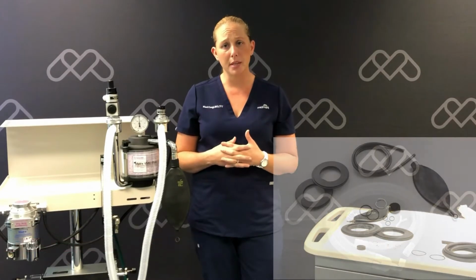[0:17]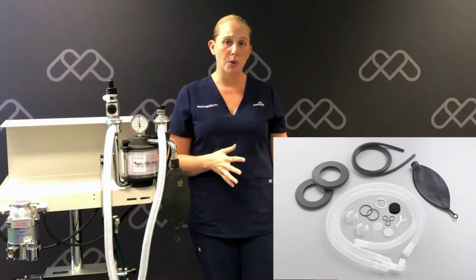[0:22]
As part of your anesthesia machine's maintenance, it is recommended that you use a maintenance kit and replace those components in that kit every 2 years. I'm going to walk you through step by step on how to replace those components.
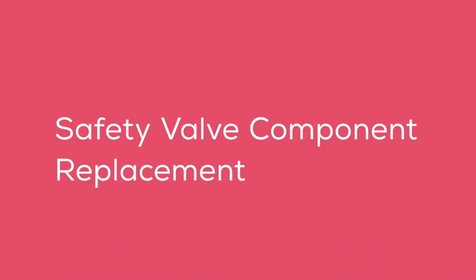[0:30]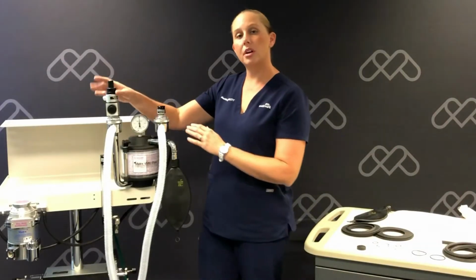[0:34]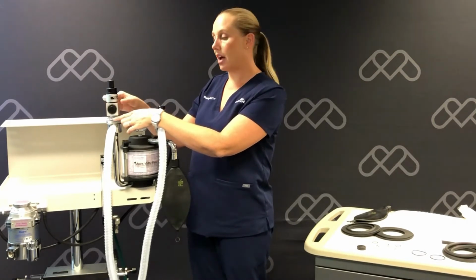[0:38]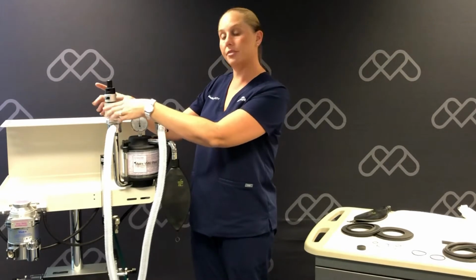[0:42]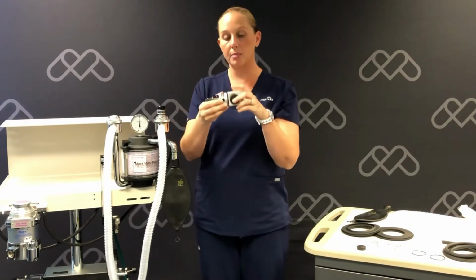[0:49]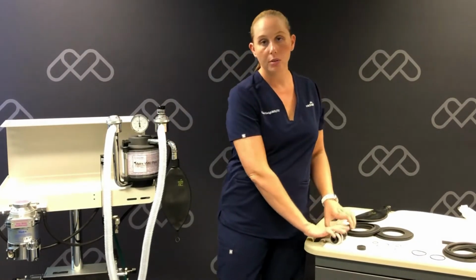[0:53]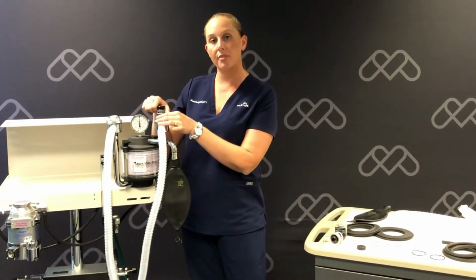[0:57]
We're going to start with unscrewing the APL valve and our safety occlusion valve from the plastic dome found on top of your exhalation valve. Once off, we're going to separate them from each other. We're also going to remove our negative pressure relief valve from the plastic dome found on the inhalation valve.
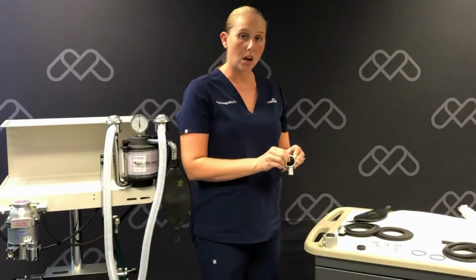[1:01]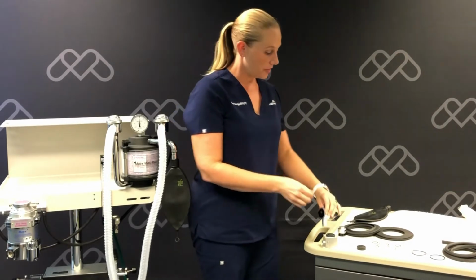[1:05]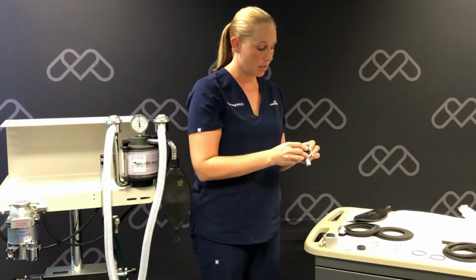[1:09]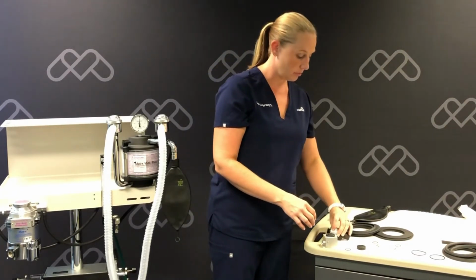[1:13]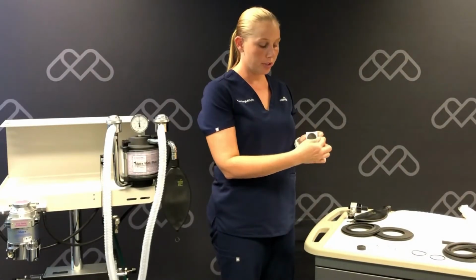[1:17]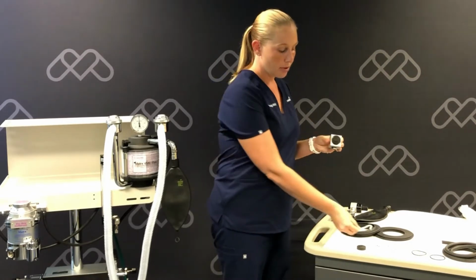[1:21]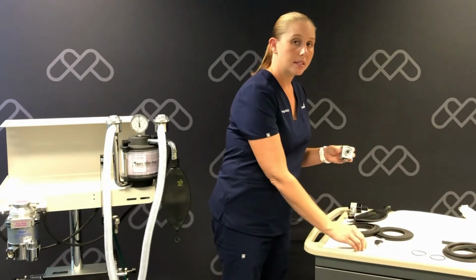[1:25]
Once these valves are off, we're going to remove the small O-rings off the threads and replace those with the new small O-rings. You will do this on all 3 of the safety valves. On the safety occlusion valve, we're going to remove the white backup ring and rubber diaphragm and then replace them with your new.
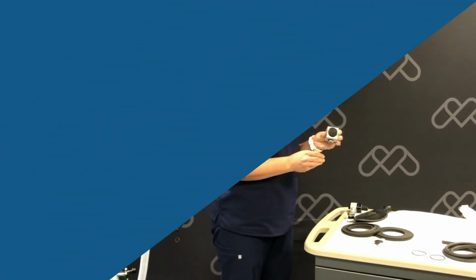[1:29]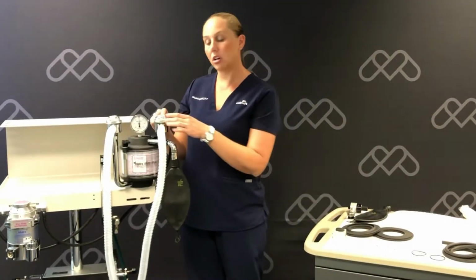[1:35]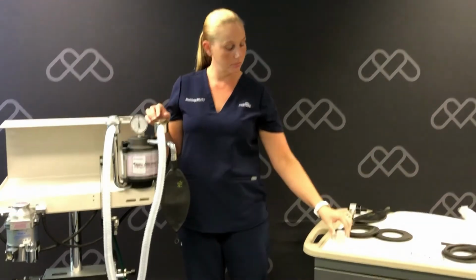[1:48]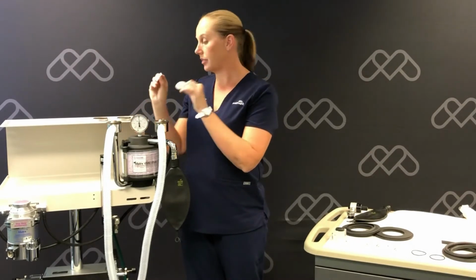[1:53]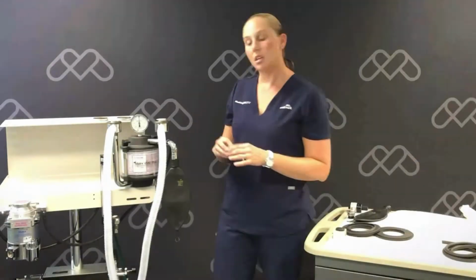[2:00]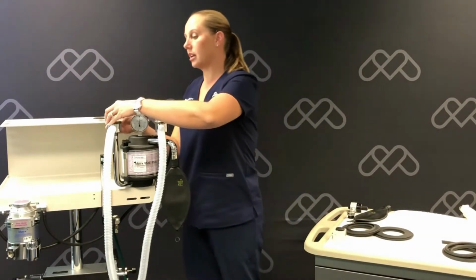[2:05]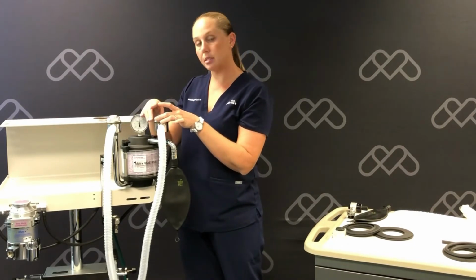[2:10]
We'll now remove our clear plastic domes from our inhalation and exhalation valves. You're going to loosen the silver retaining ring to get to them. We're also going to remove our white flutter disc off each valve and the large O-ring and replace those with the new. We'll place our new clear domes on the inhalation and exhalation valve and tighten them back down with the silver retaining rings.
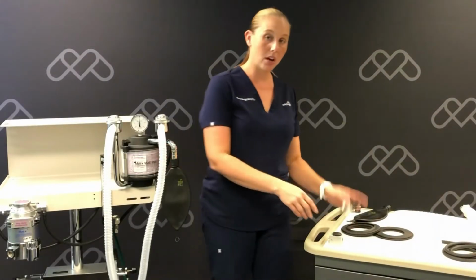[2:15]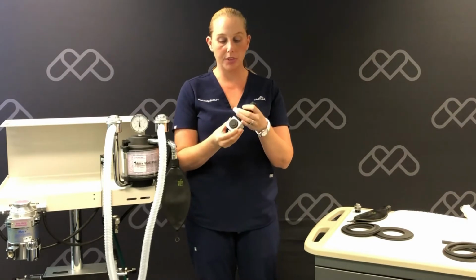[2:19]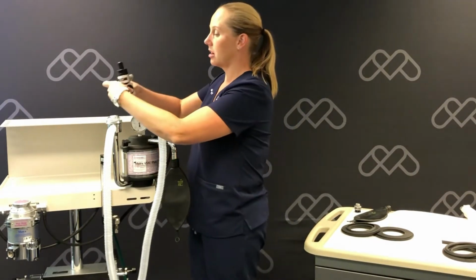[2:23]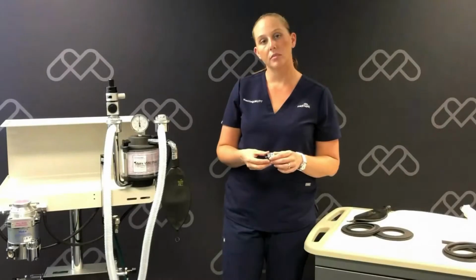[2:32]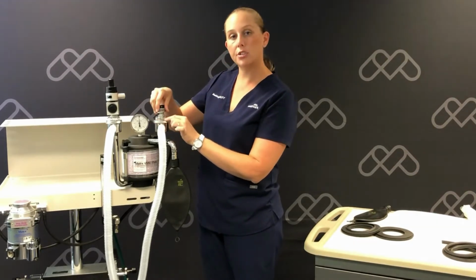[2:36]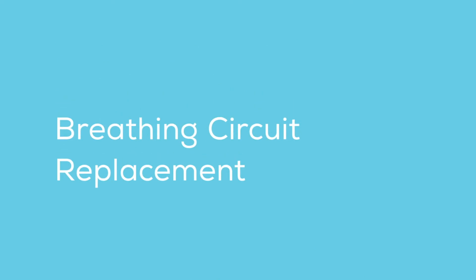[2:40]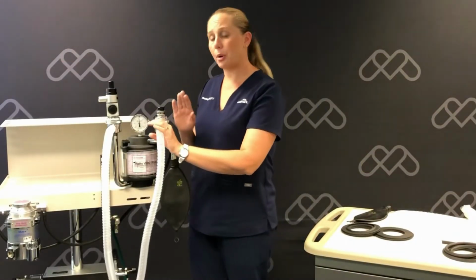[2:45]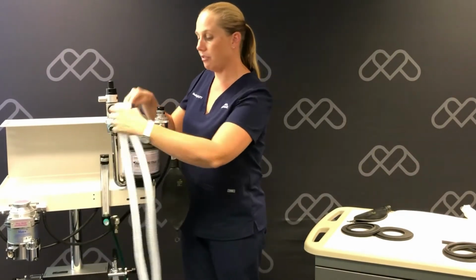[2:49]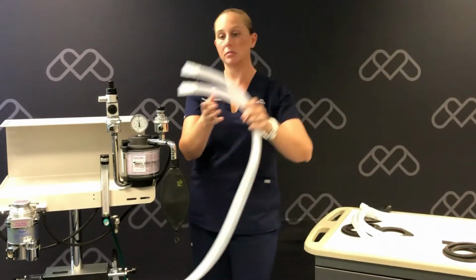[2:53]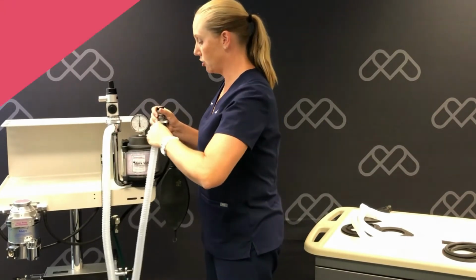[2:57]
Now we'll take our APL valve and our safety occlusion valve, put them back together with the threaded end, and we're going to reattach that onto our exhalation valve clear dome. Our negative pressure relief valve will now thread into the clear dome of our inhalation valve. Now we're going to remove our patient breathing circuit from the inhalation and exhalation valve, and we're going to replace it with our new. We're just going to push that onto the exhalation and inhalation valve.
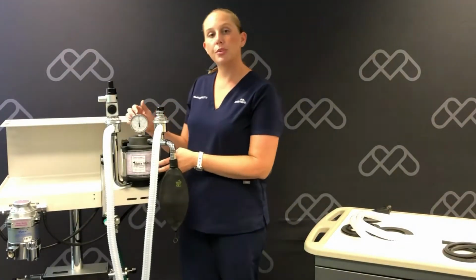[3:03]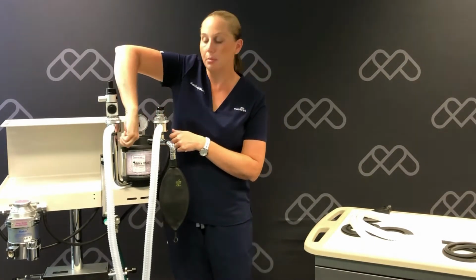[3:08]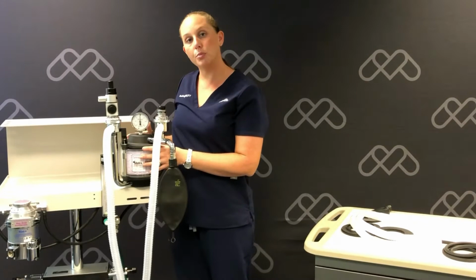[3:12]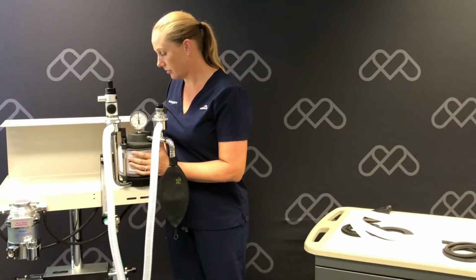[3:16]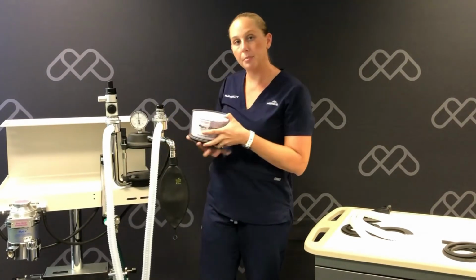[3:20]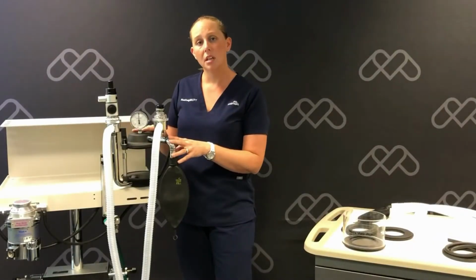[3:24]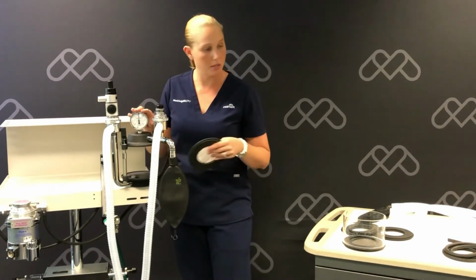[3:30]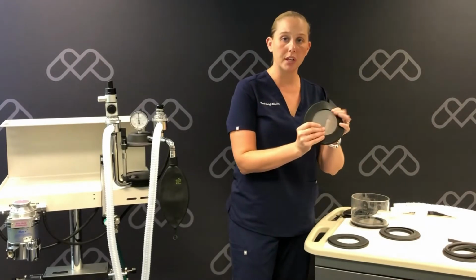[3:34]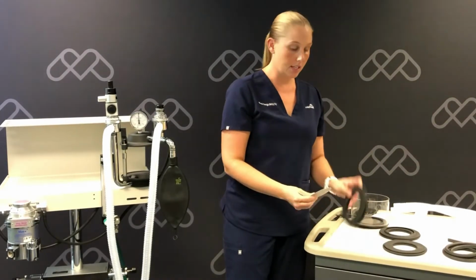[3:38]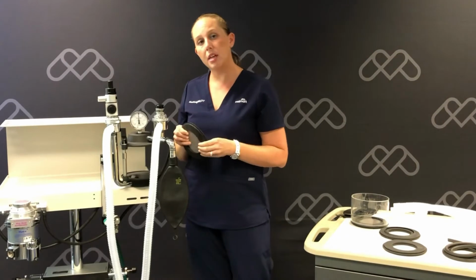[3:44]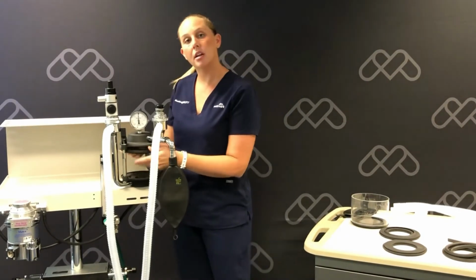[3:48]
Now we're going to remove our CO2 absorbent canister. We'll need to flip up the black flip levers of our CO2 absorbent housing. We'll discard this old soda lime that's in our canister. We're going to remove the upper rubber gasket from the upper portion of our absorber housing. We're going to remove the screen out of our upper gasket and place it inside the new. We're going to then put the upper gasket into the absorber housing with the lip facing up.
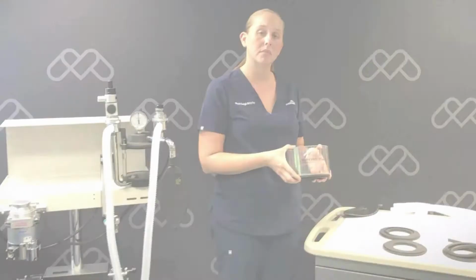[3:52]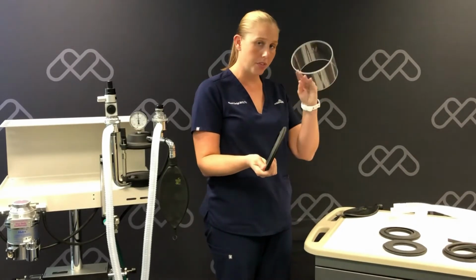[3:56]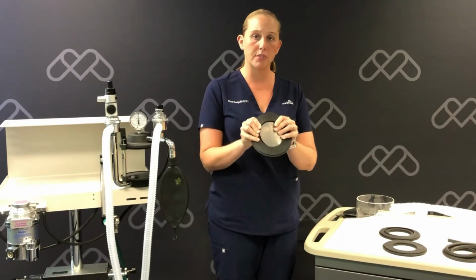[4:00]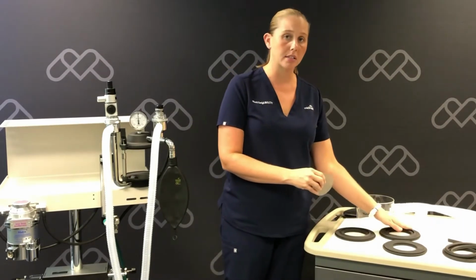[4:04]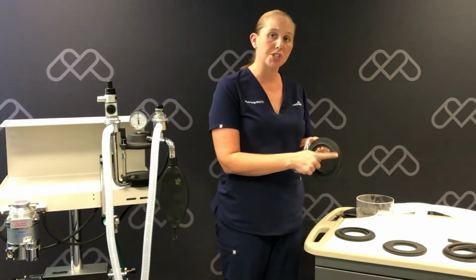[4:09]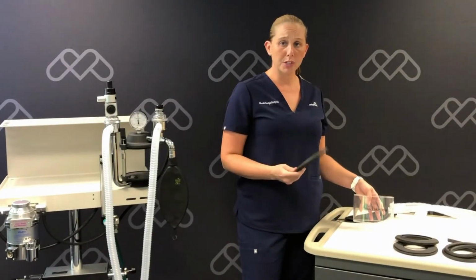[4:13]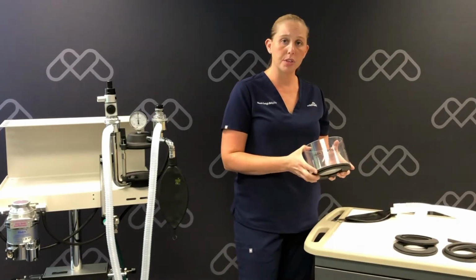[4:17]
Now we're going to pull or push the lower gasket off of the CO2 absorbent canister. We're going to remove the screen from the gasket and place that into the new lower gasket. The lower gasket will have an inner ridge which differentiates it from the upper gasket. Now we're going to replace the new lower gasket onto the absorbent canister with the ridge facing upwards.
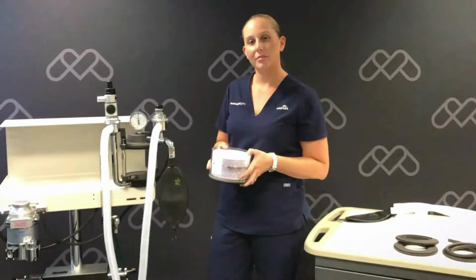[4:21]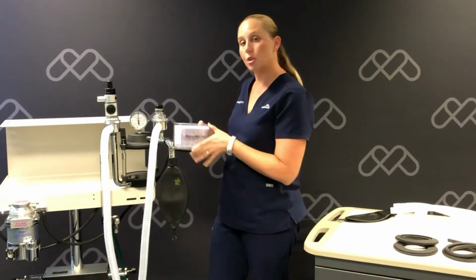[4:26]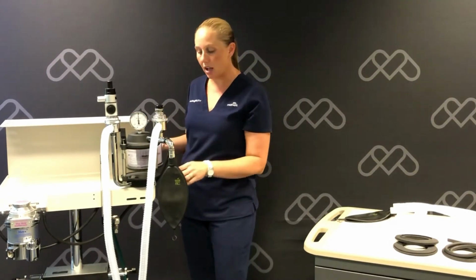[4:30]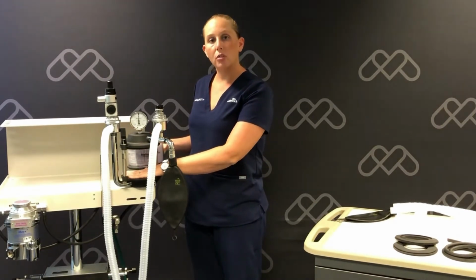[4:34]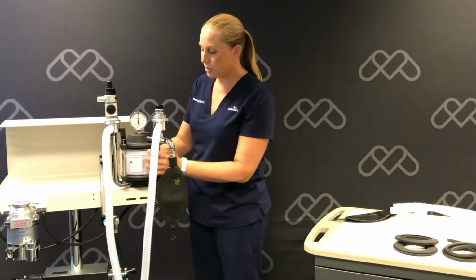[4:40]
Now we're going to replace our CO2 absorbent canister back into the absorber housing. We want to make sure that it's seated well. We also want to check for any debris that may be on the lower housing from the absorbent material. It's a good idea to clean that well if needed. We'll secure this back into place by using the black flip levers.
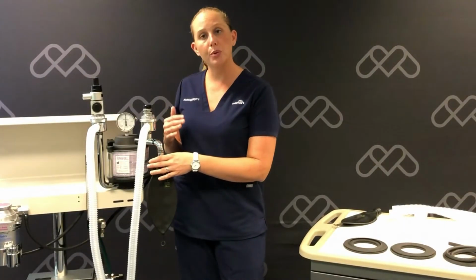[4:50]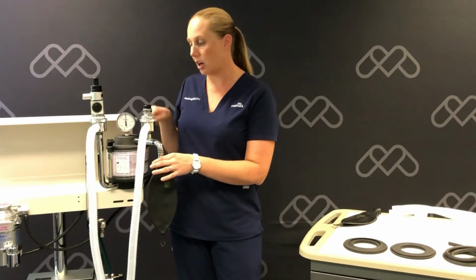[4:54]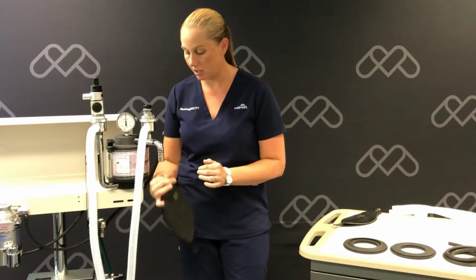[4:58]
Now we're going to remove and replace our reservoir bag off of the bag arm of our absorber. So I'm going to pull it by the neck and replace it.
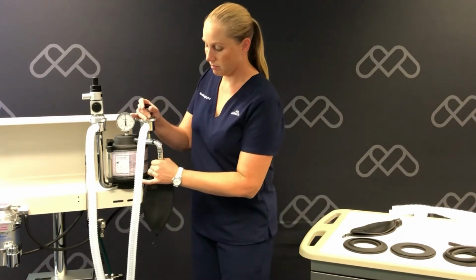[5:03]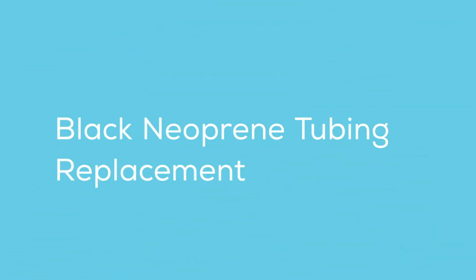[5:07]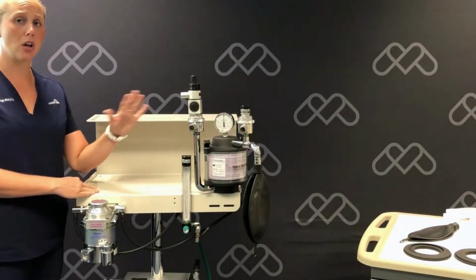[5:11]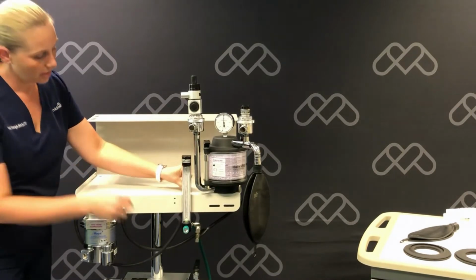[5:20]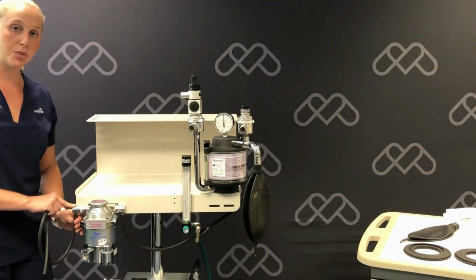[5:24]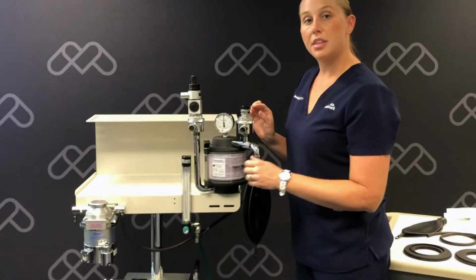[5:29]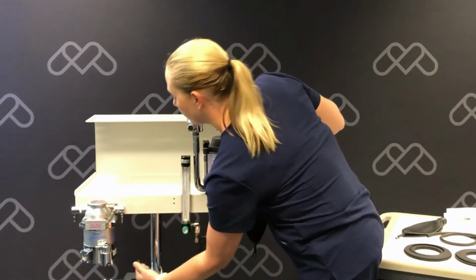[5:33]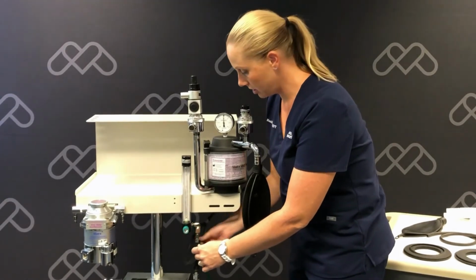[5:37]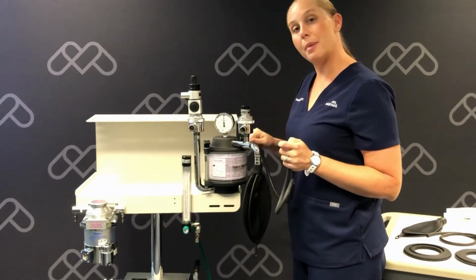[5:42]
Now we're going to remove all our black neoprene tubing and the plastic Y connector. I'm going to start by removing the tubing off the back of the flow meter, and then continue removing this piece from my vaporizer's inlet adapter. The next piece I'm going to remove is off of the vaporizer's outlet adapter. It then removes from the back of our flush valve and up here on our absorber housing on the bag arm.
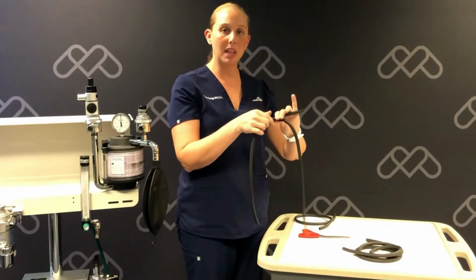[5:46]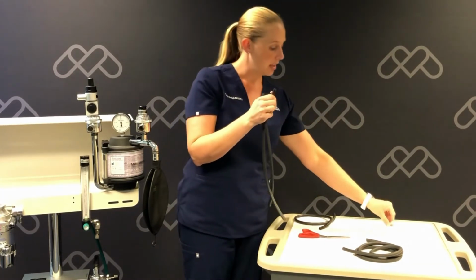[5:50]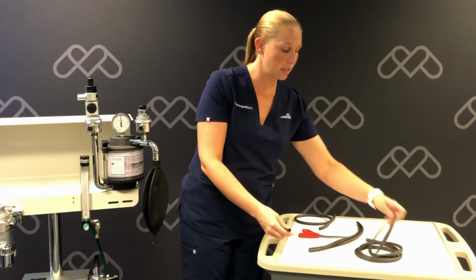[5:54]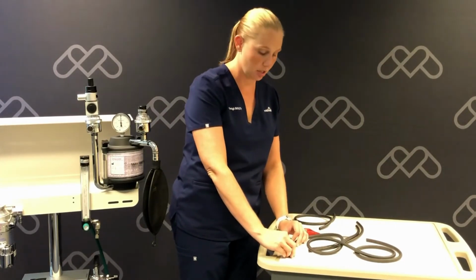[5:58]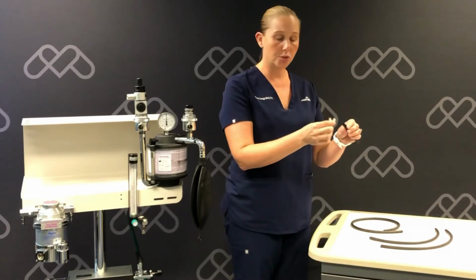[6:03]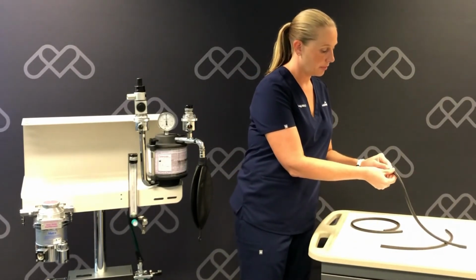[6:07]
Now we'll remove the black neoprene tubing off of the plastic Y connector. I will now use my new tubing and I'm going to cut to size for each piece that I just removed off the machine. Now we're going to put our new Y connector onto our new tubing. And we're going to put it back on our machine.
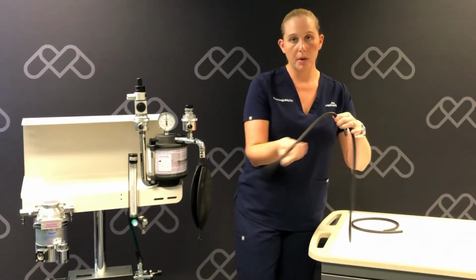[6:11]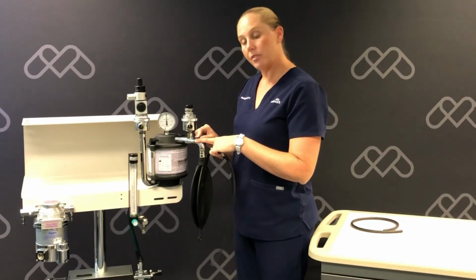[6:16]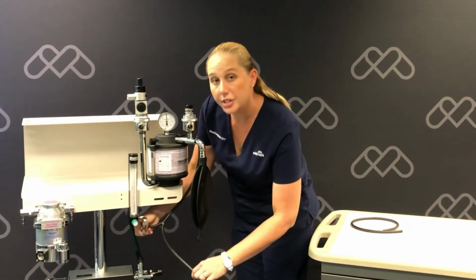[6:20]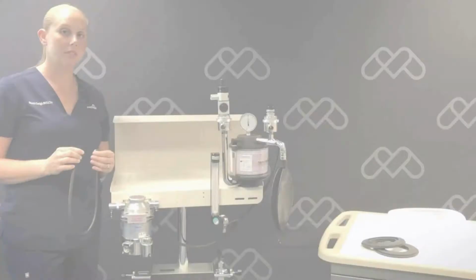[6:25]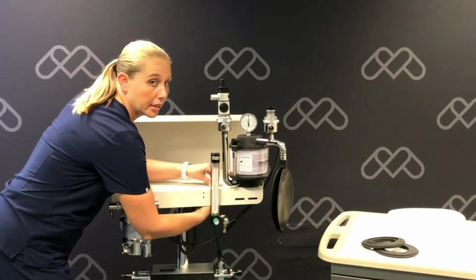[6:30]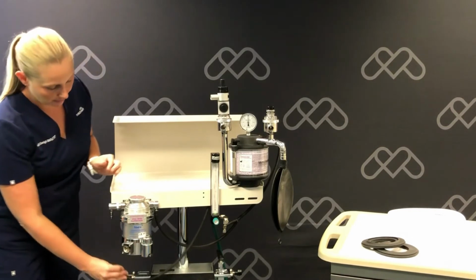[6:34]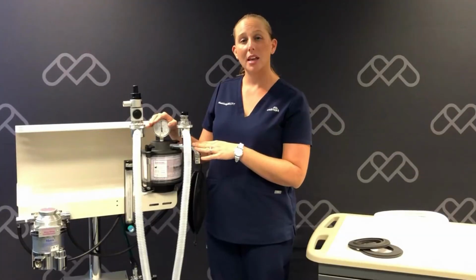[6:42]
So we're going to start by putting one piece on the bag arm of our absorber, then on the back of our flush, and back onto the vaporizer's outlet adapter. Our final piece of tubing we're going to put at the back of our flow meter, and the other end will go to our vaporizer inlet adapter. Now we've completed installing our maintenance kit.
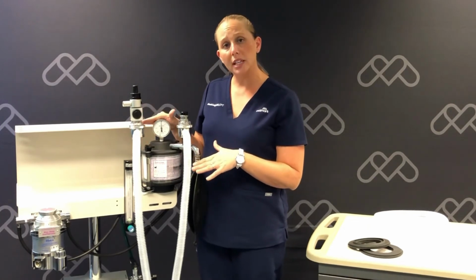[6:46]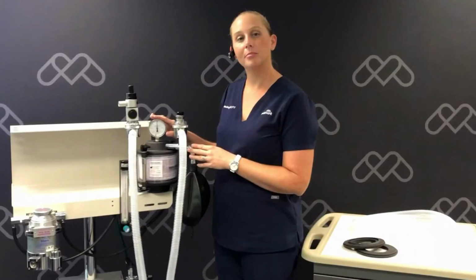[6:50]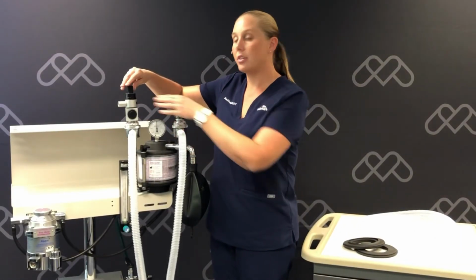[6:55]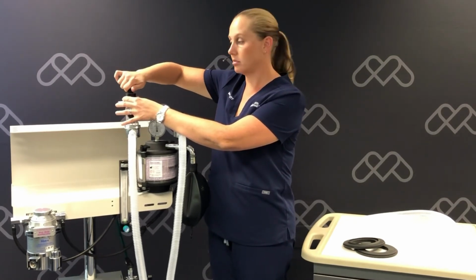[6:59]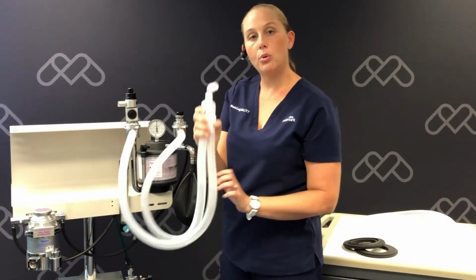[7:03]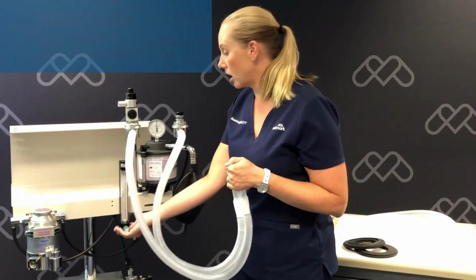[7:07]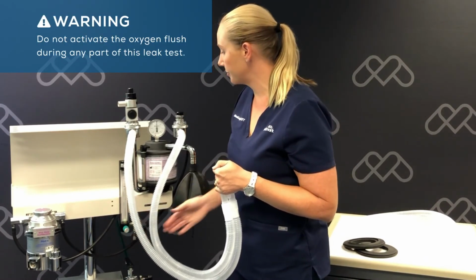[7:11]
Now we're going to want to do a leak test to make sure there's no leaks in the anesthetic machine. To begin our leak test, we're going to start with closing our APL valve. We're going to turn it clockwise in the direction of the pressure arrow. We're going to then cover the Y portion of our patient's breathing circuit with our thumb and turn on our oxygen flow meter. This will begin pressurizing the system.
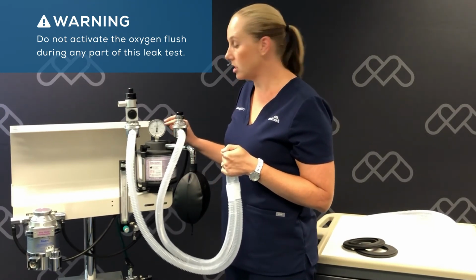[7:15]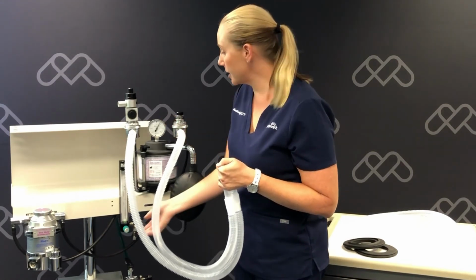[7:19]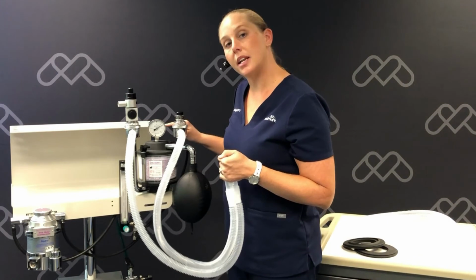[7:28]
We're going to monitor the pressure on our pressure gauge. This is also called the manometer. We want to get to a pressure of 30 centimeters of water. Once we're there, we'll turn off the flow meter. If the pressure holds steady, we do not have a leak in our anesthetic machine.
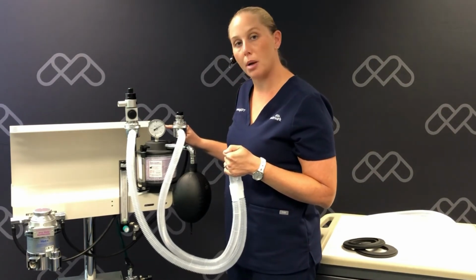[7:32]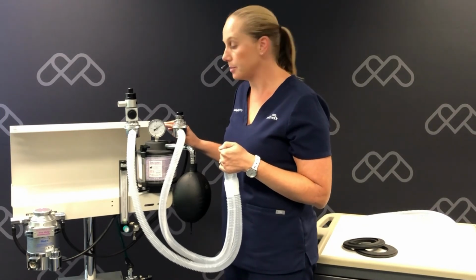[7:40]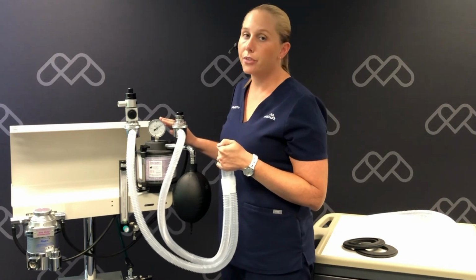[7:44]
If the pressure is dropping, you'll just slowly turn the flow meter on enough to stabilize the pressure. The amount of oxygen needed is how big your leak is. If your leak is over 300 milliliters, you'll want to refer to your anesthesia machine's owner's manual or reach out to us here at Clinical Support.